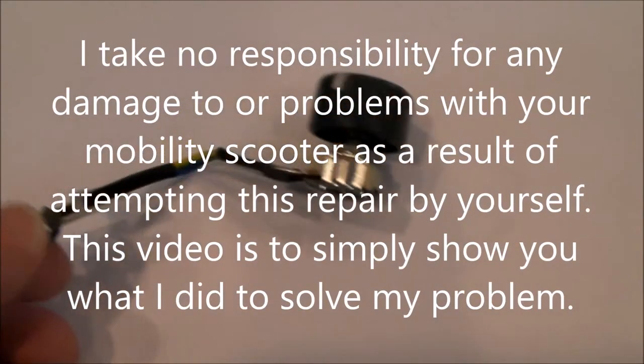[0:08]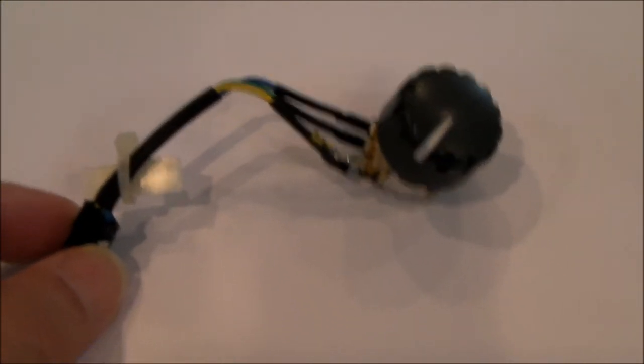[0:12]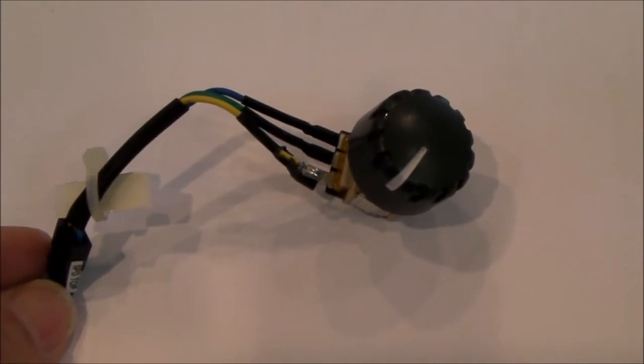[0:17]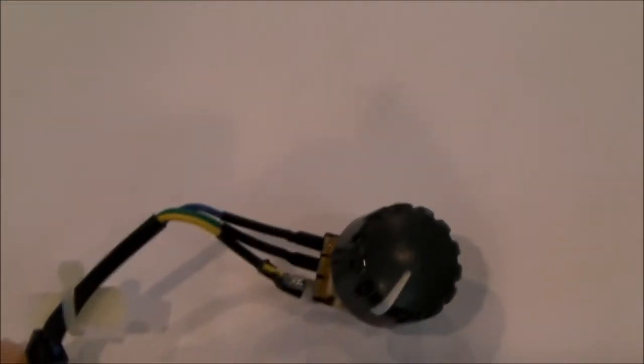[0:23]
Hello everybody. I recently picked up a mobility scooter and a lot of issues with it. One, the batteries were in really bad shape. They were almost completely discharged. Well, they were discharged to 0.2 volts on each of the two 12 volt batteries. So I would say that's fully discharged.
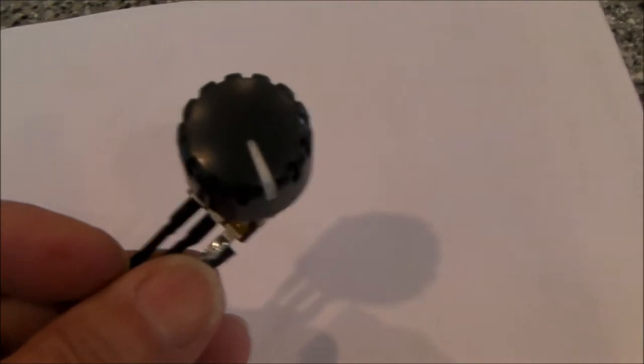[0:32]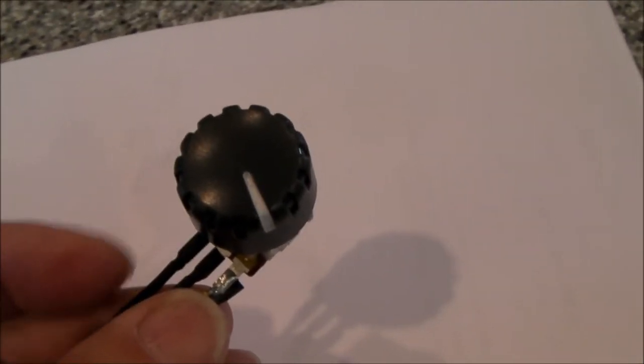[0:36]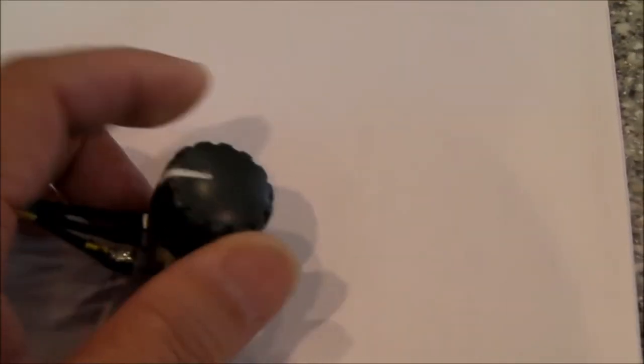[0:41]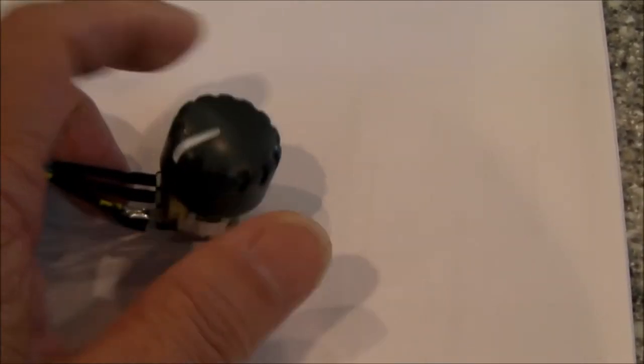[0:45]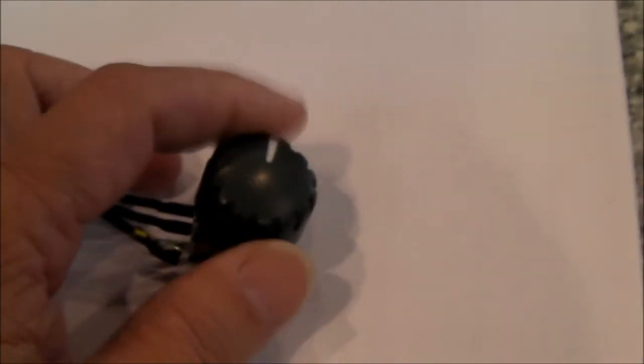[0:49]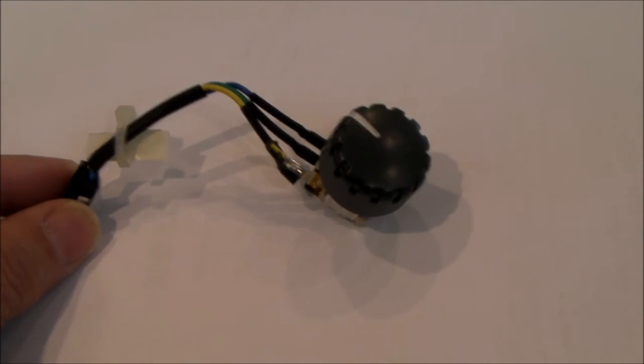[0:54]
The second problem I had was the speed pot, or the speed potentiometer. It's also called the rabbit and tortoise control, which is slow and fast. But the issue was the stop has been broken on this. You see, I can turn this full 360, no stop. And in certain positions, it causes the controller to generate a fault. So I've decided to replace this.
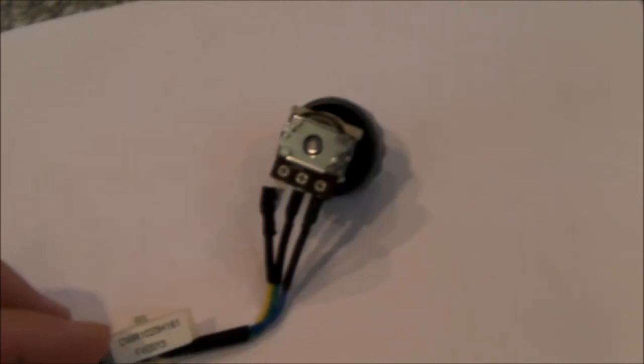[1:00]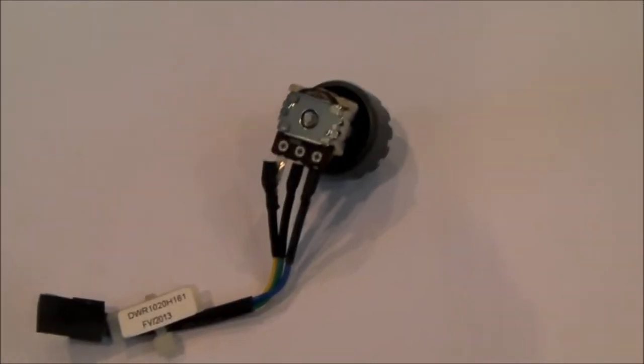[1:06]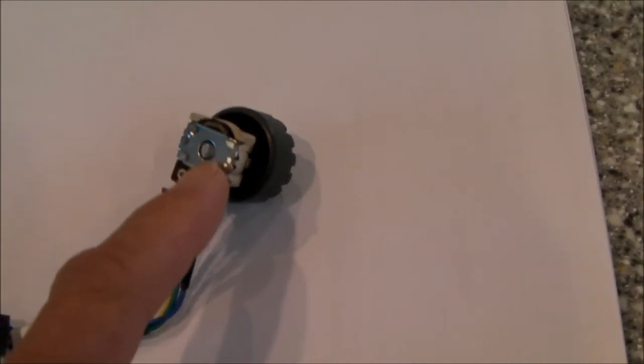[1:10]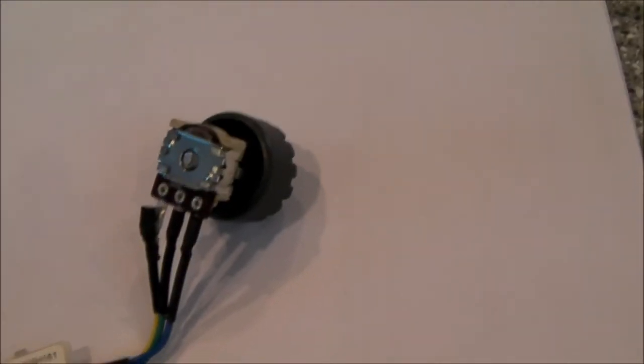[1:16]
And I've done a little bit of research online. You can buy the complete whole assembly here for, let's call it 20 bucks, give or take. But I decided that if I could just find the correct potentiometer or pot, I could solder a new one on there and keep the old knob and keep the old plug. So that's what I've done. I've ordered a new potentiometer. I don't have it yet. But here are the things to pay attention to.
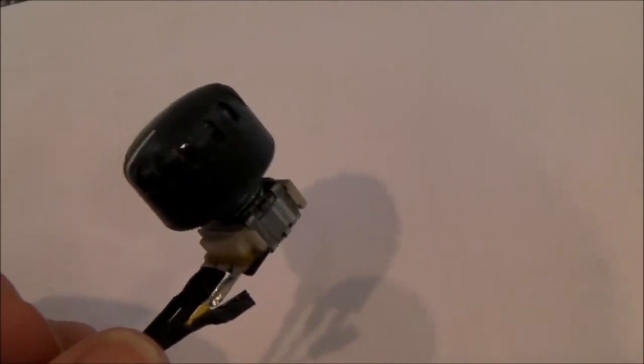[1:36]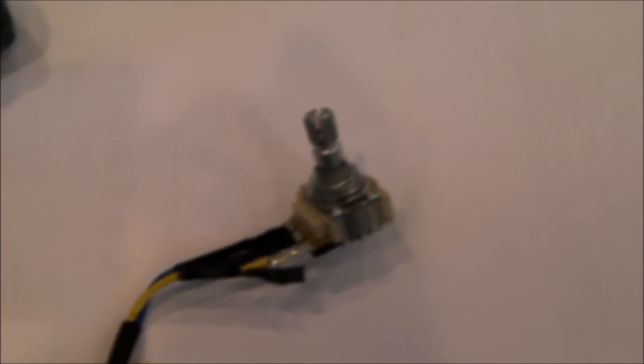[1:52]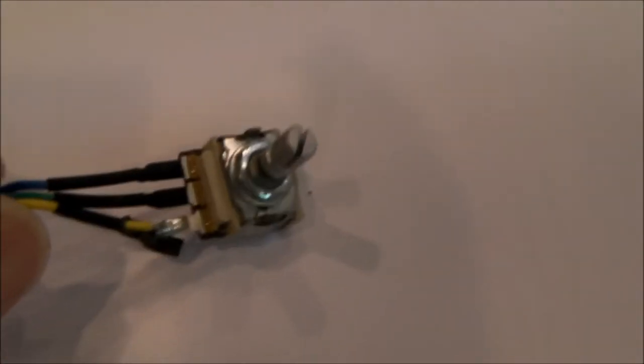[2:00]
One, this particular potentiometer is 100K ohms. Number two, as best I can determine, you want a potentiometer that's rated a half watt. You also want it to be what is known as a linear taper. And a linear taper, I'm just trying to pull the knob off here, sorry. The linear taper is the curve of the resistance as you twist. It's not important. What you need is a linear taper, not to be confused with audio taper or any other forms of taper. And then the last thing you need to pay attention to is the shaft.
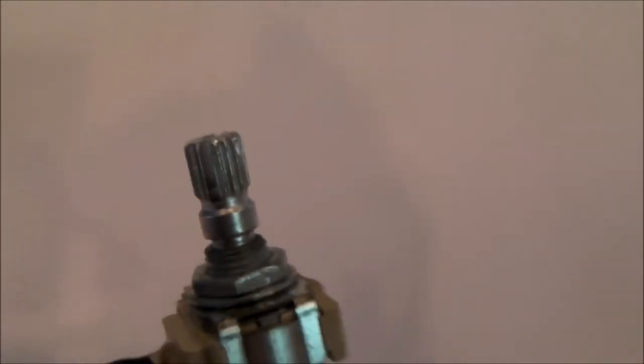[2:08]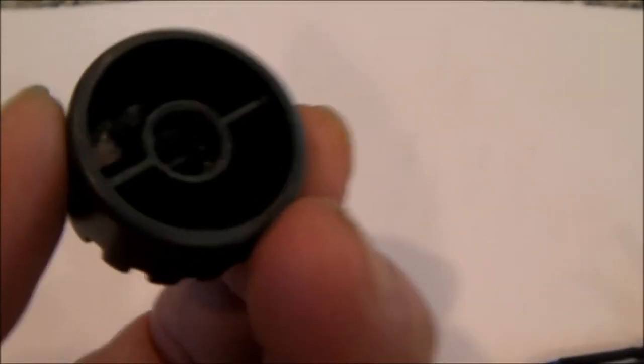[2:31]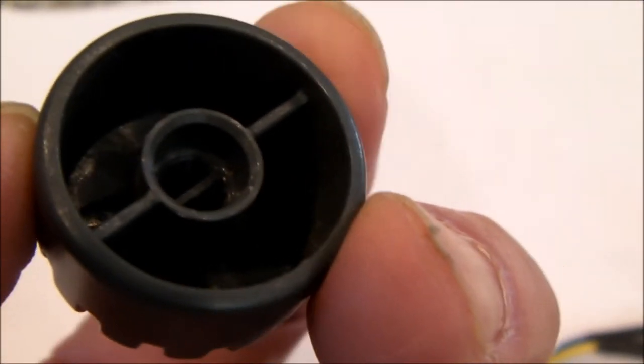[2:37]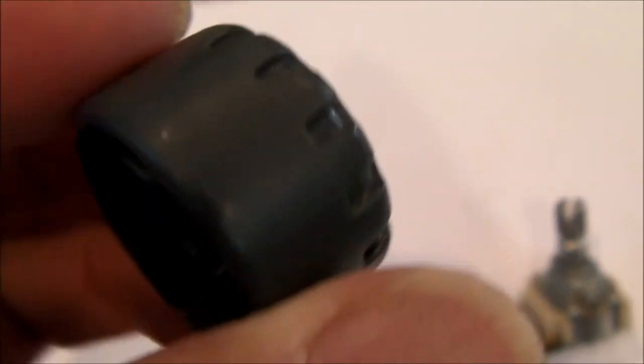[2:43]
In this particular case, this is a knurled slotted shaft, aluminum, not to be confused with a plain round shaft or a shaft with a D, or what they call a D shaft, which would mean a round shaft with a flat on it. I wanted to keep the external appearance of this all OEM, so I wanted to use this knob again. And so you can see this knob will probably not work very well on a plain round shaft or a D shaft. A plain round shaft is going to require a set screw through the side, and this knob does not have that provision. So a plain round shaft is not going to work.
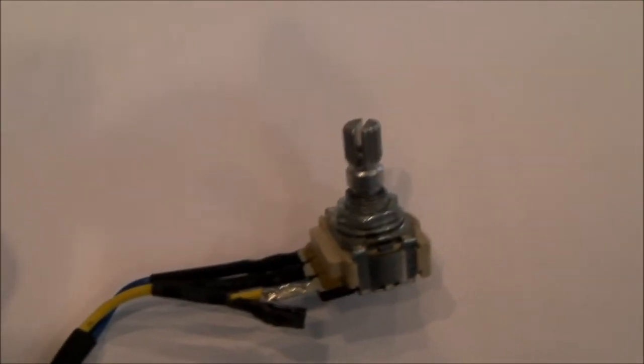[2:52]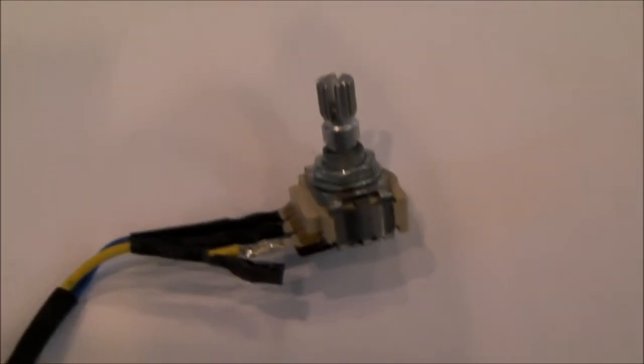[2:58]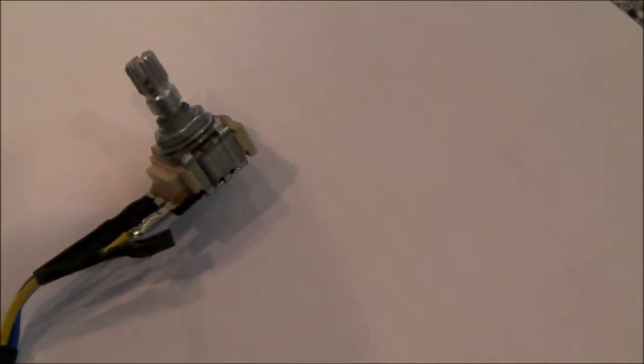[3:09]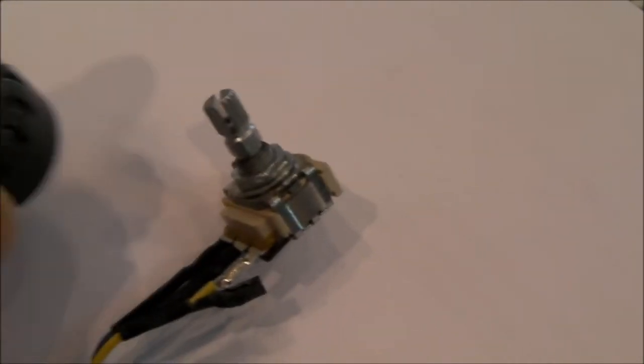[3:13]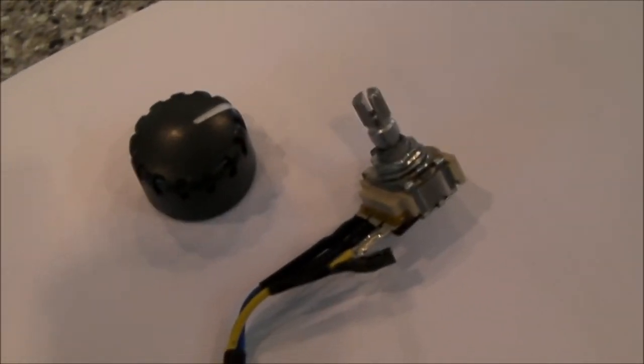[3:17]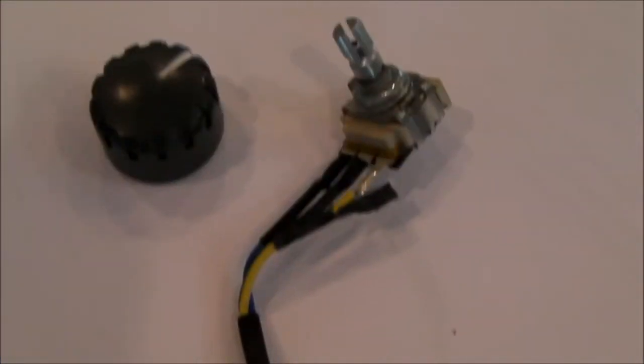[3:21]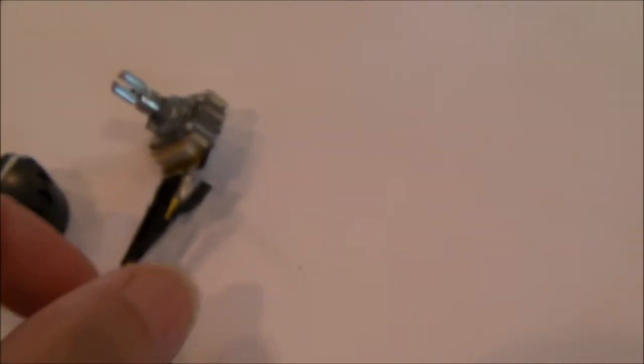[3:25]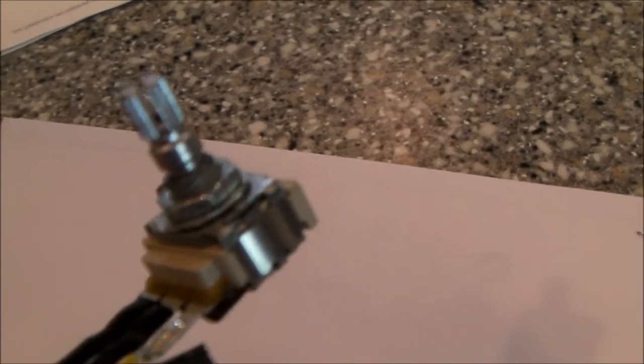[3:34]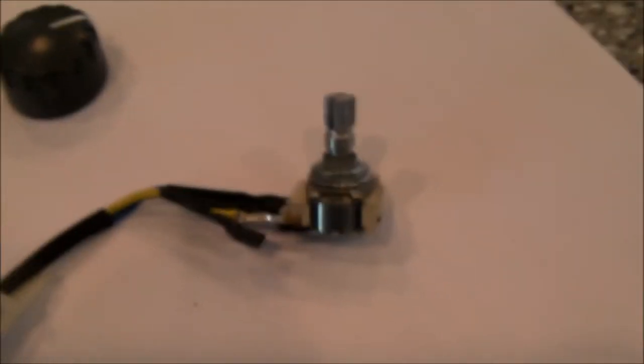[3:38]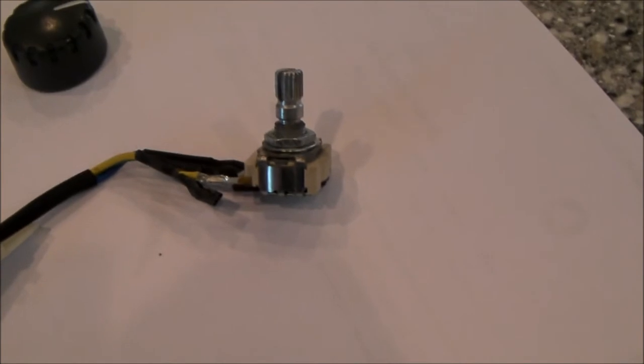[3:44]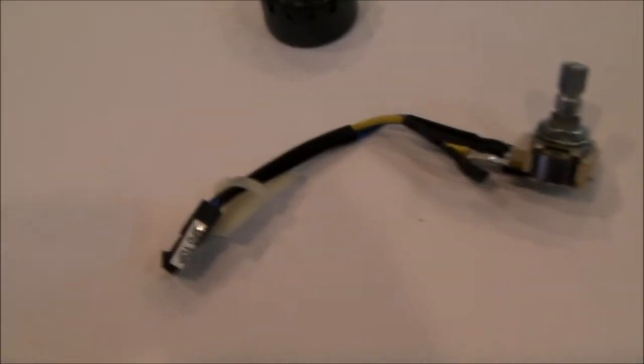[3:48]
I believe that since this was a knurled slotted shaft, the replacement potentiometer I'm using also has a knurled slotted shaft. So I tried to avoid the plastic shaft. I figure that in this particular application, this knob is going to get a lot of use in some outdoor environment, rugged application, right? These mobility scooters are not like sitting at your desk at home. So those are the things to pay attention to. Linear taper, you're going to need a little bit of heat shrink tubing. I would get an aluminum knurled slotted shaft. Next thing I'm going to do is when I get my new potentiometer, I'll try to shoot a little bit of video showing you how I use this harness again.
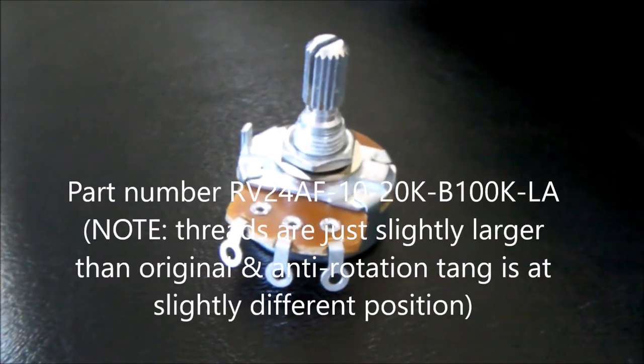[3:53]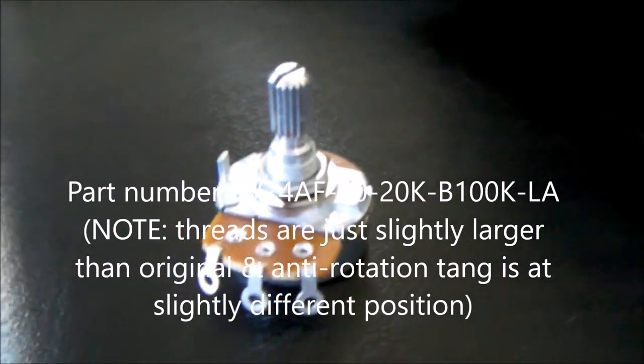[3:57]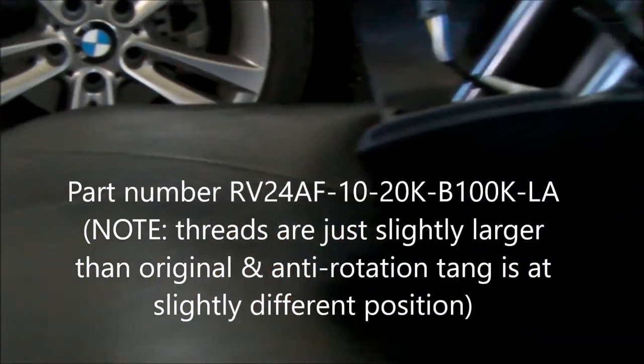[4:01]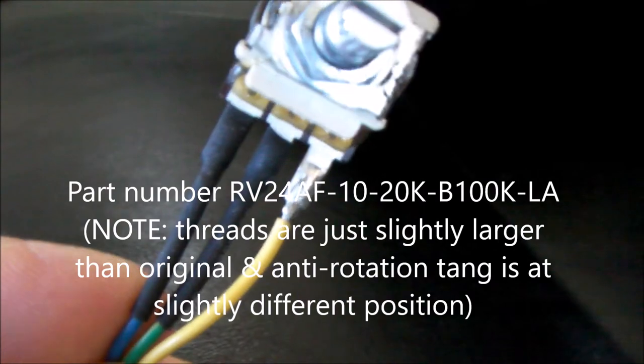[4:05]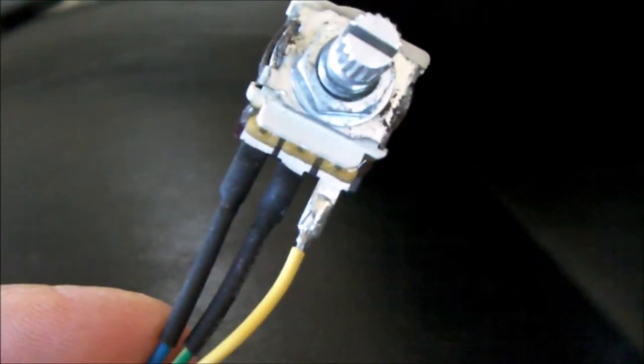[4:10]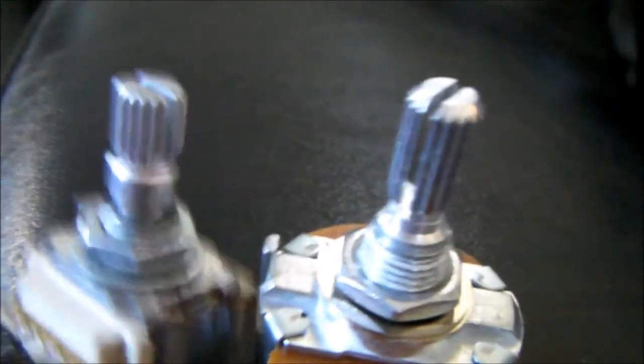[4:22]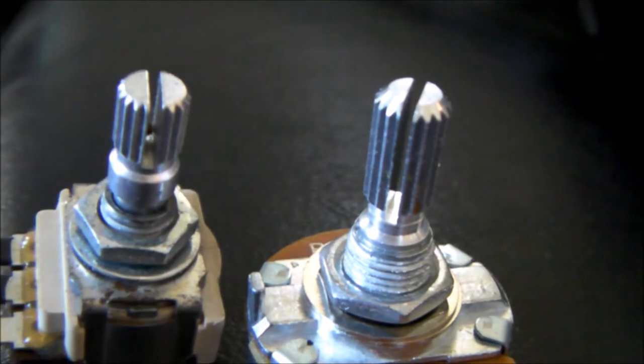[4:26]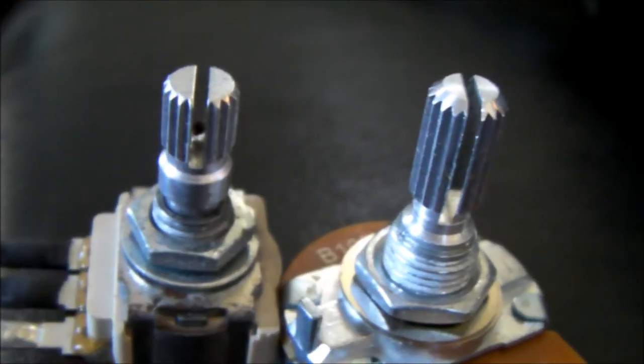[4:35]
My new speed potentiometer has finally arrived, and there's a close-up look of it. As you can see, it has eyelet terminals. So this is the original right here. I'm going to finish stripping off the black insulation off the other two wires. I'm going to slide new insulation over those three wires, and then I'm going to reattach it to this. So you can see again the similarities between the two. Knurled shaft, aluminum, not a solid round shaft, not a plastic shaft, and not a plain round with a D.
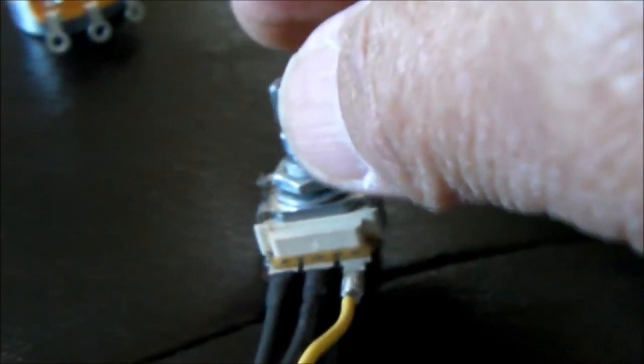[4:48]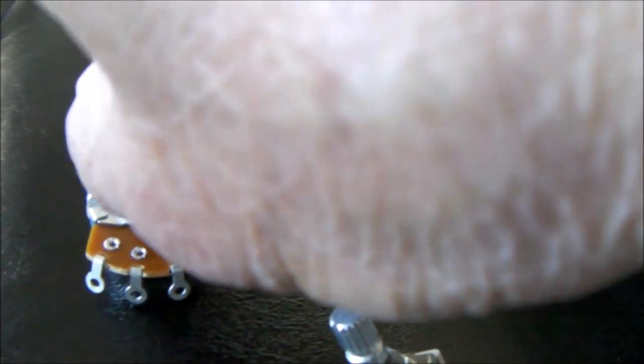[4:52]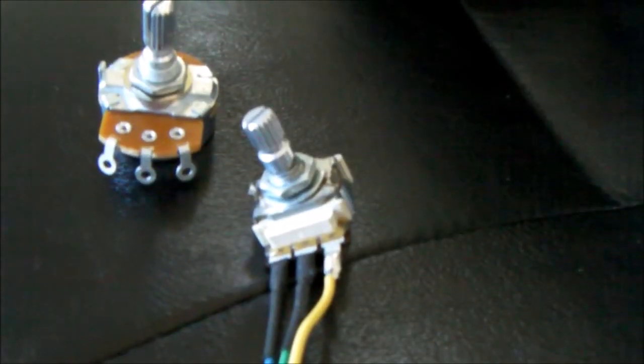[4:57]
And as I mentioned earlier, this knob doesn't stop. You can just continuously rotate it. And in certain positions, it throws a fault code on the scooter. On this one, the stop works, and that should be a very simple solution to my problem.
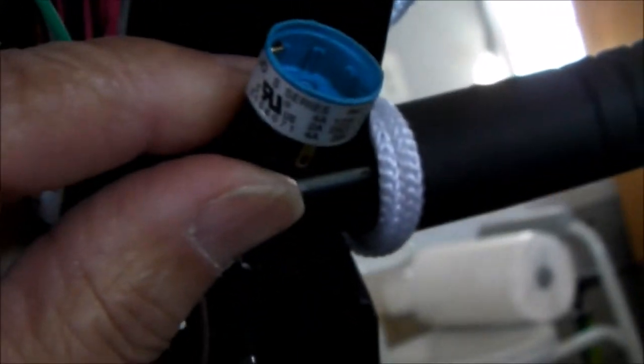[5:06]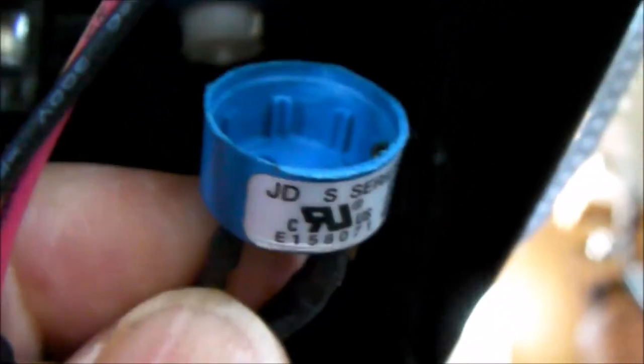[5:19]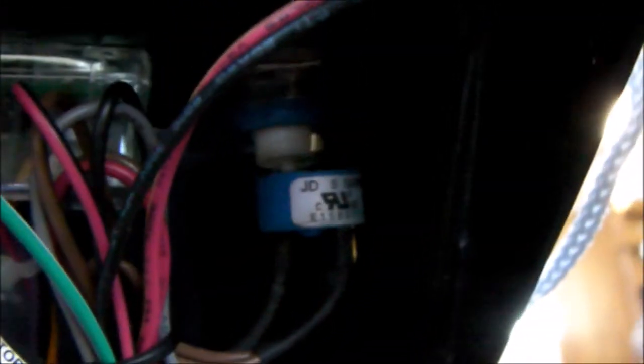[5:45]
I will also point out while I'm in here that the key switch has a tendency to unplug. So I'm going to reattach it to the correct position. It's very difficult to see, but it snaps into position. I'm going to hit it with a spot of super glue, and I'm probably also going to put some hot melt around it just to keep it from popping off. It only pops off when I take the control panel off, but I would hate for my mother to be stranded somewhere and not be able to use the scooter. Sorry about the focus here. I don't seem to be able to get it to focus. There's another view of it. I hope it focuses a little bit better. But there's the switch. It sits on the bottom of the key. So as I say, that's the key switch, popping off when I take the cover off, so we're going to fix that.
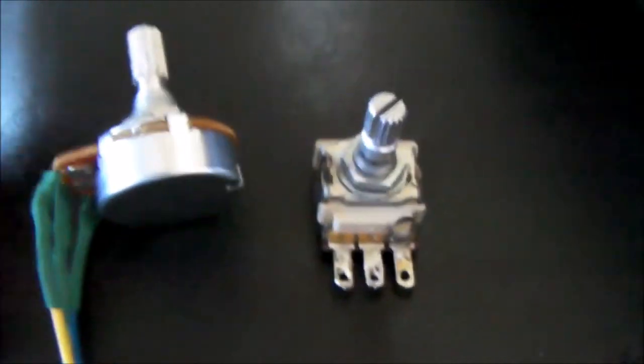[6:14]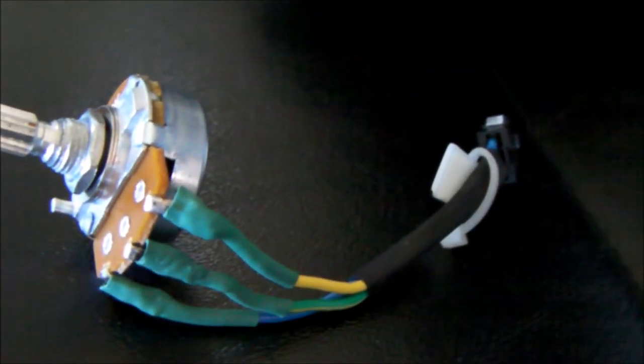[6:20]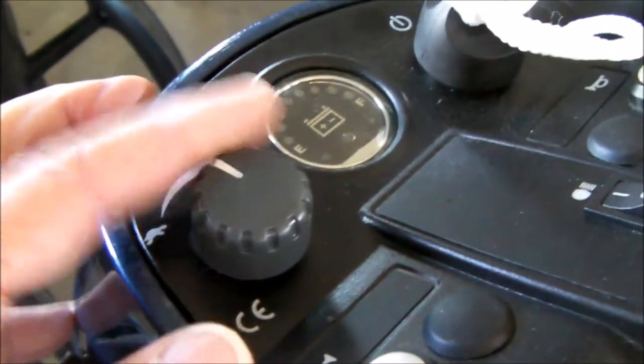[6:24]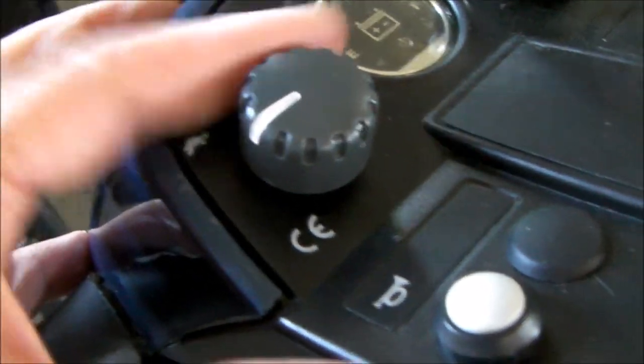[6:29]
Now I've transplanted the original harness from the original speed pot over to the new speed pot, and I'm going to install it now. Well, here it is installed. Works beautifully and it stops, so I'm very pleased with it.
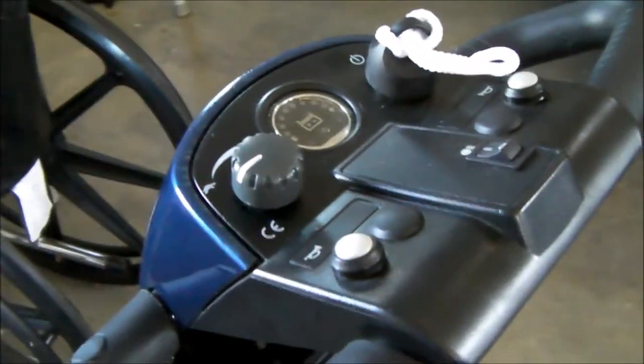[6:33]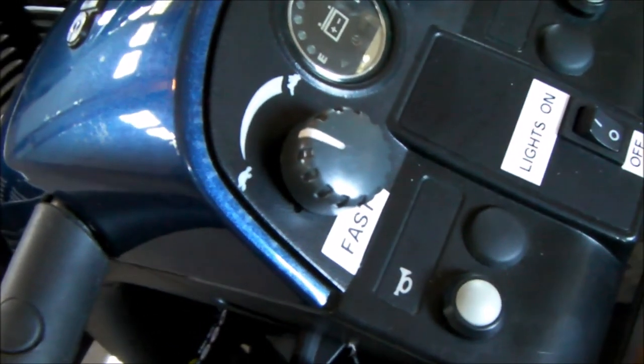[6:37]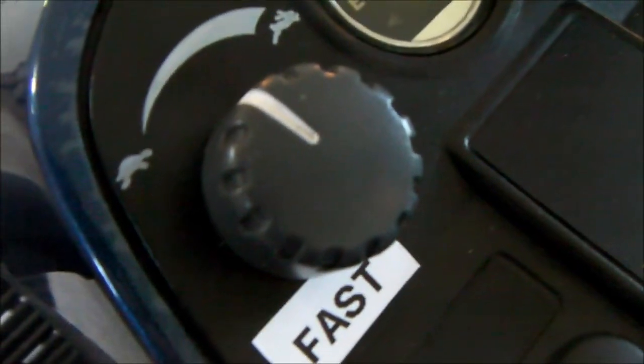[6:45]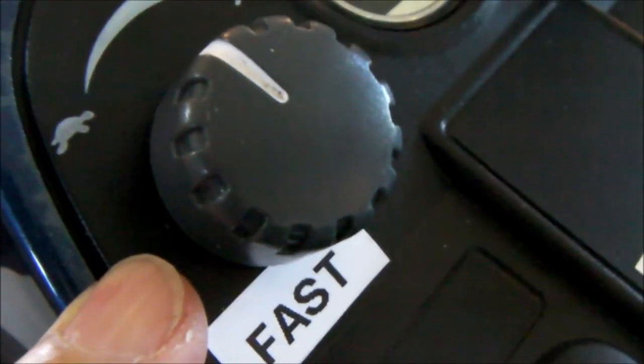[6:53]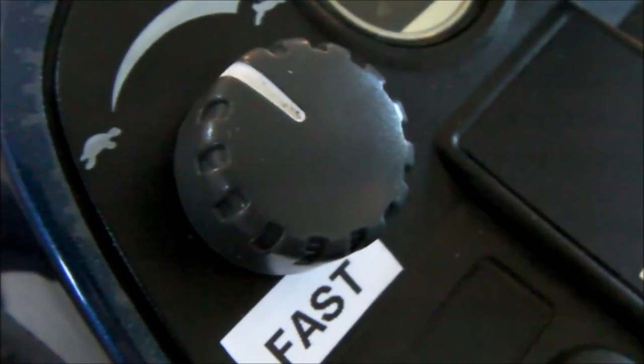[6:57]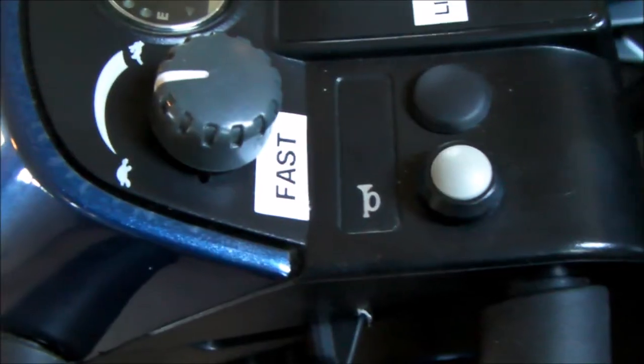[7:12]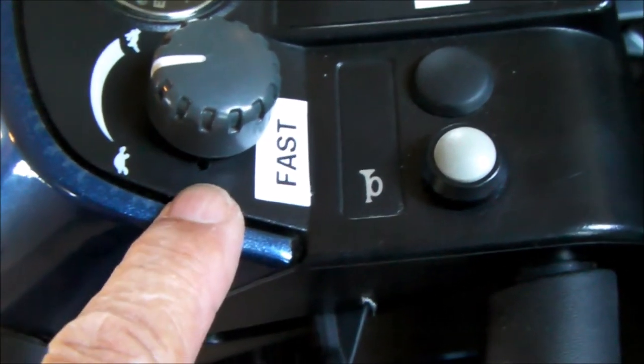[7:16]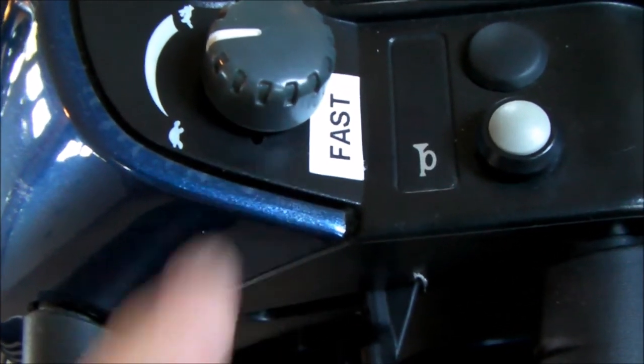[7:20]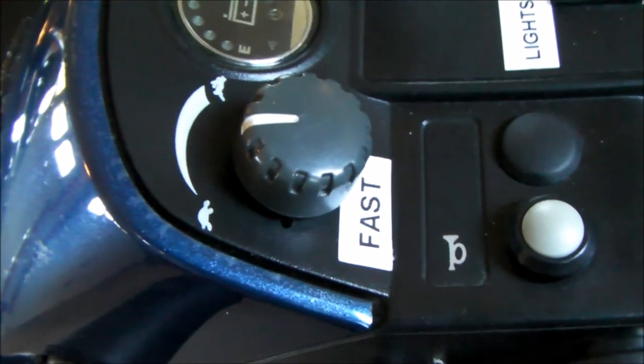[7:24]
Well, nothing ever goes exactly according to plan. As it turns out, the stem of the potentiometer that I had was a little bit larger in diameter than the hole that was originally there. So I had to take a few thousandths off that hole. I just took my pocket knife out, and this is plastic, so I wanted to enlarge the hole a little bit. And I thought it was all done, but there's also an anti-rotation tang or a lock, and I ended up having to put another little hole there. Now you can see a little hole right there. That's another hole I had to add to put the little anti-rotation tang up through it.
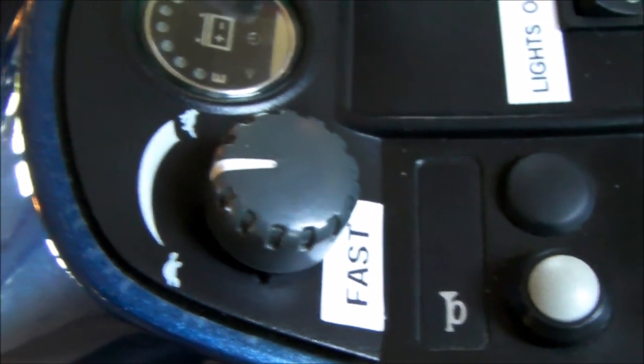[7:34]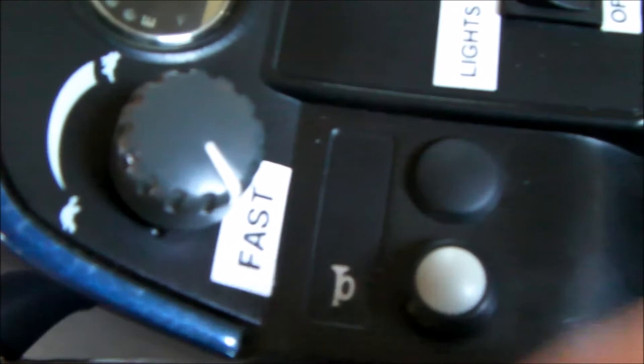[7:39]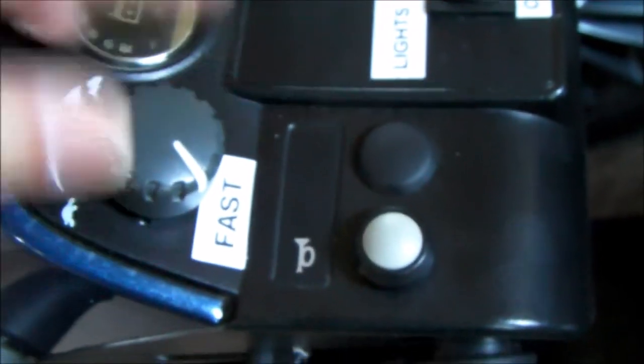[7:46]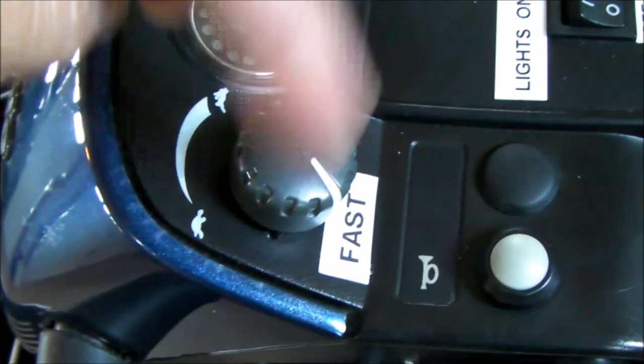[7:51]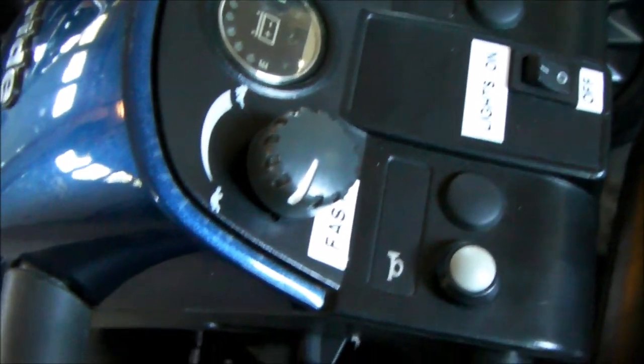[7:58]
You actually can just bend the tang off of your potentiometer, because you can put enough torque on the nut and make this speed pot really tight so that it's just not going to rotate out of place. Anyway, I've accomplished my objective here, and that is the original pot when I got the scooter didn't stop. It used to just continue to rotate all the way around. But it stops now. Works great. So it's 100 kOhms, knurled shaft, and you want a linear taper.